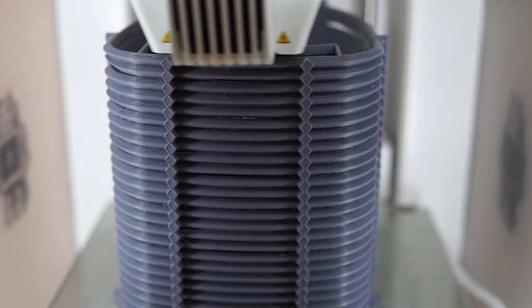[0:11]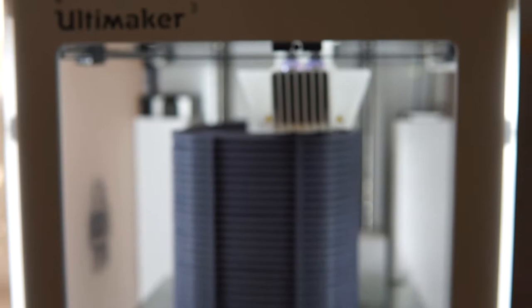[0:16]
Today we're going to talk about 3D printed face shields like this one. And we're going to make them by stack of 30, like that, using a single extruder machine, so basically any printer. Dimensions are based on this open source model that fits most people's head.
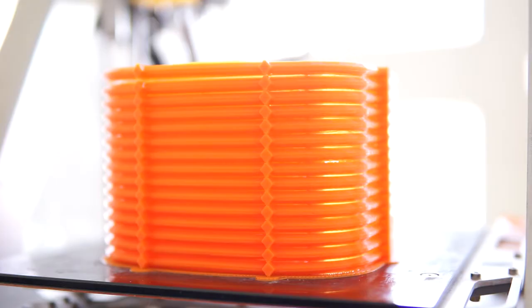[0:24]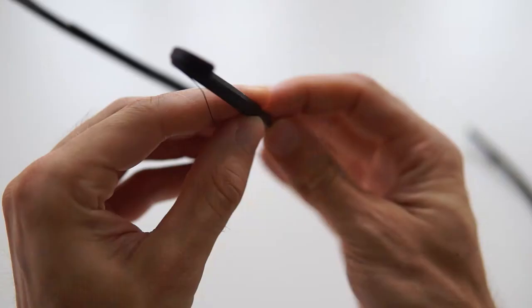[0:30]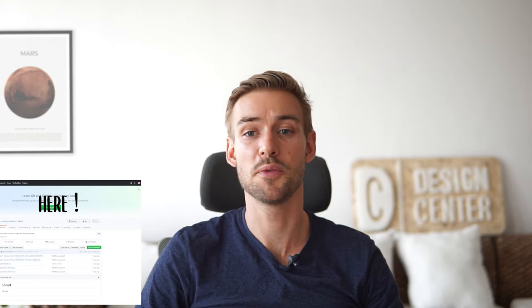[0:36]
The changes are in the section. In order to print stacks, the section is now triangular, and the curve is now plane and not concave in order to improve strength and rigidity. In the description, you will find the GitHub link to my STL and CAD file.
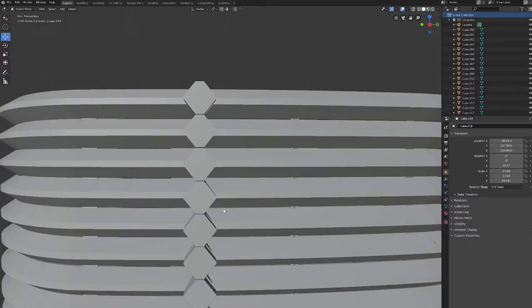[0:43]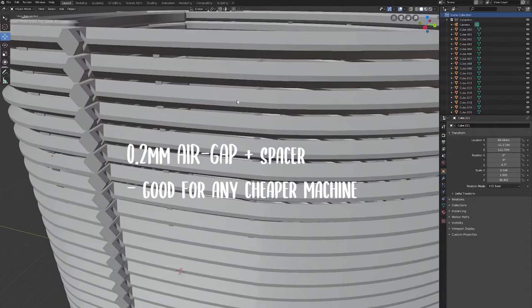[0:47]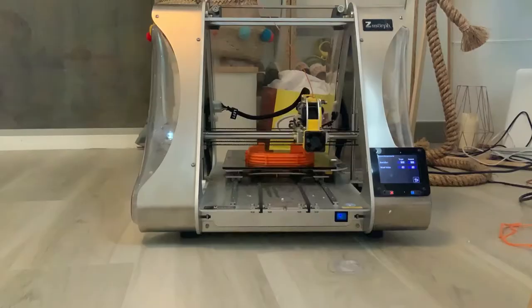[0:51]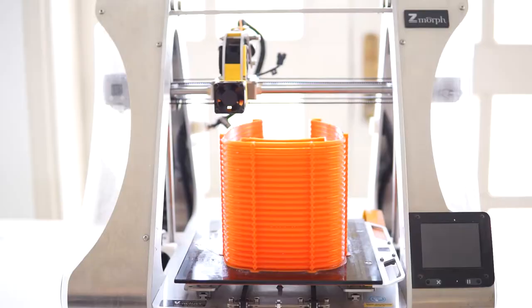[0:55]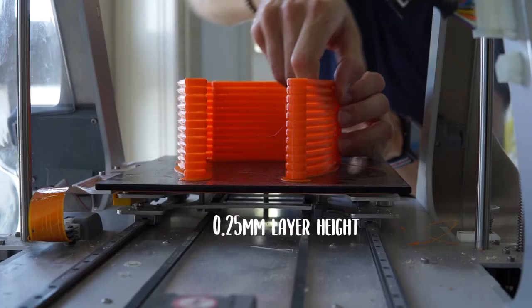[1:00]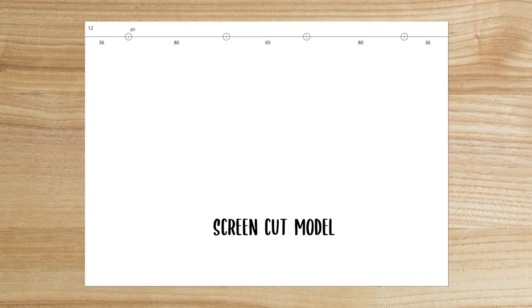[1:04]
I'll let you two kinds of stacks, one with a 0.1 mm gap and another one with a 0.2 mm gap. The 0.1 mm work great with very accurate machines like ULTIMAKER, and the 0.2 work well with machines like CR10 or ZMorph, such as mine. It also depends on your layer height. I recommend 0.25.
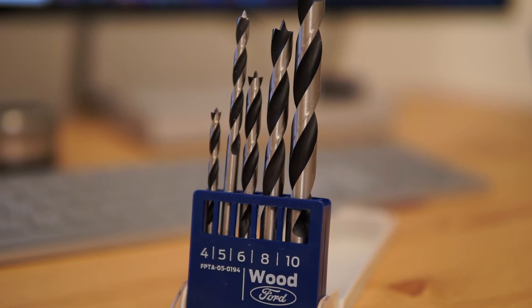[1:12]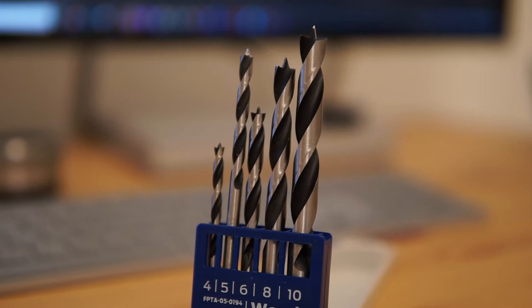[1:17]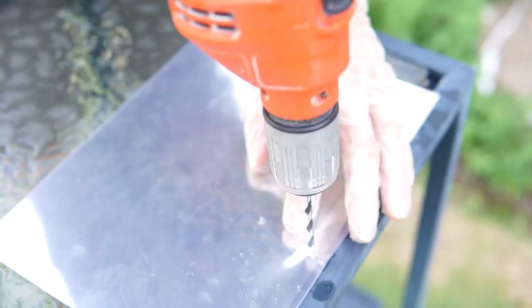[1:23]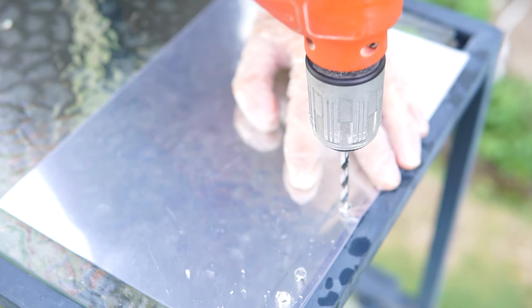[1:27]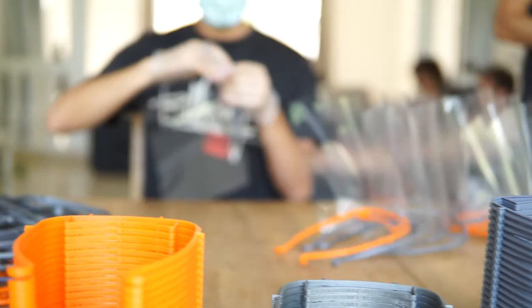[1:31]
Here is a plan for the screens. The 80 mm is the standard size of the punching machine. You can use this. Personally, I use a drill because it's faster. For the drill, use some 5 mm wood drill bits. It'll be very clean. For the screen, I use some PVC binding covers, 180 micron. They are affordable and they do the job great. You can drill by pack of 50, so it goes very fast.
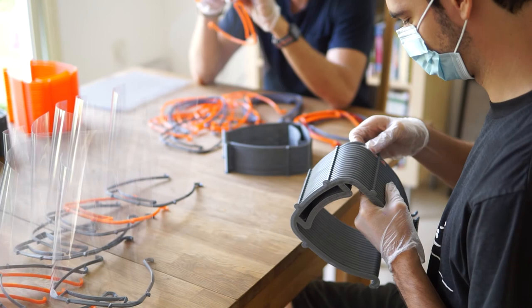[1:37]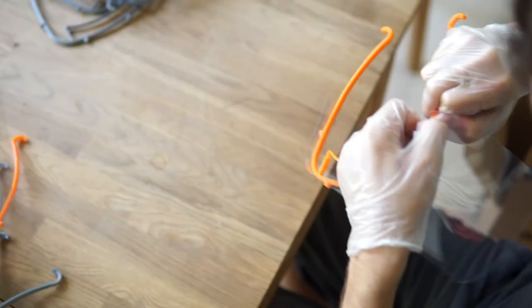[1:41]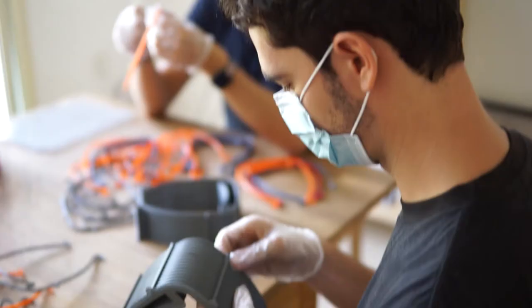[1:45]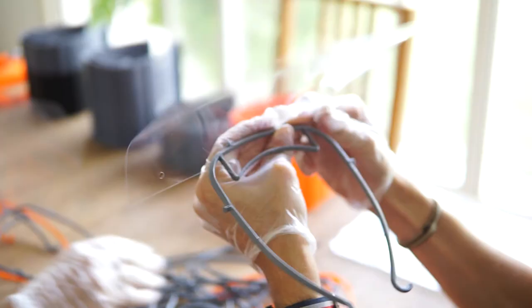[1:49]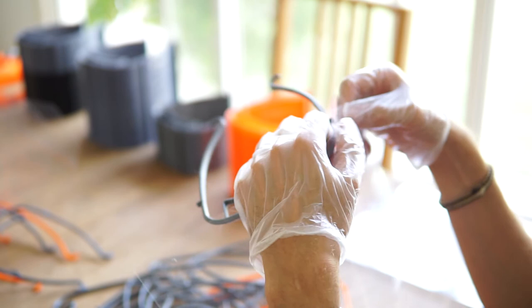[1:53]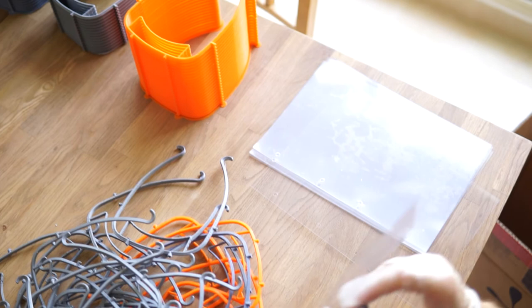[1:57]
And here is it, the final assembly line. Unstacking the shield is very fast. And the only action we do is unstacking, then assembling the shield, using glove and mask to limit any risk of contamination. After that, the shields are directly going in the cardboard. In 1 hour, the two of us, we did 200.